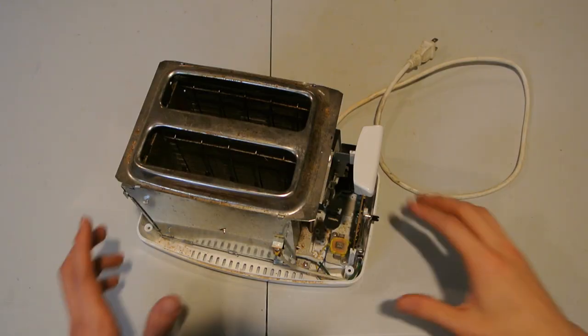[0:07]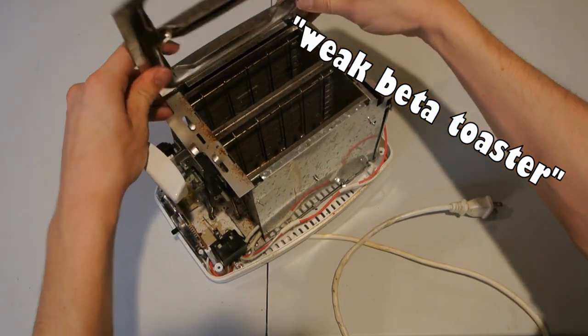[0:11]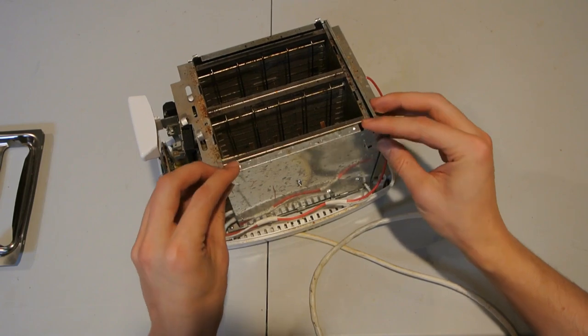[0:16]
In today's video, I'll be showing you how I turned this weak beta toaster into an alpha furnace with temperature control and over 1000 degrees Celsius temperature capability. Really, this project is much more of a meme than it looks.
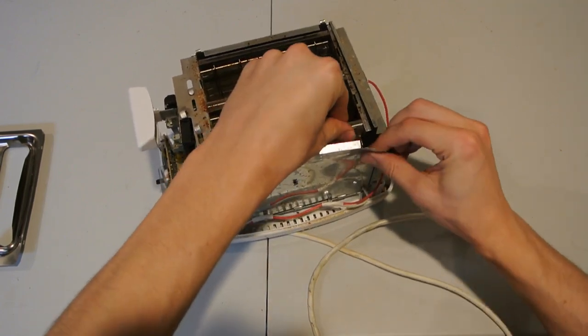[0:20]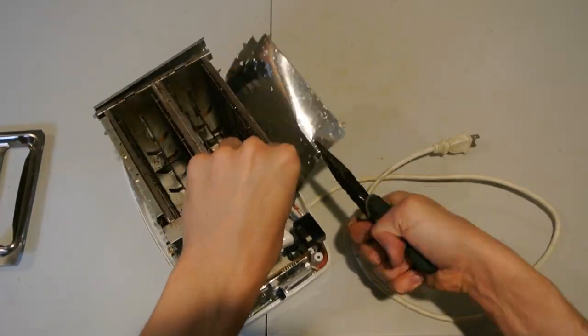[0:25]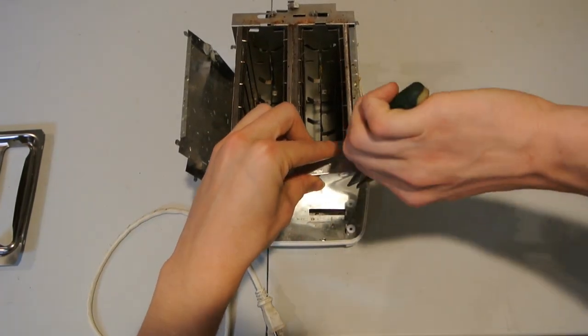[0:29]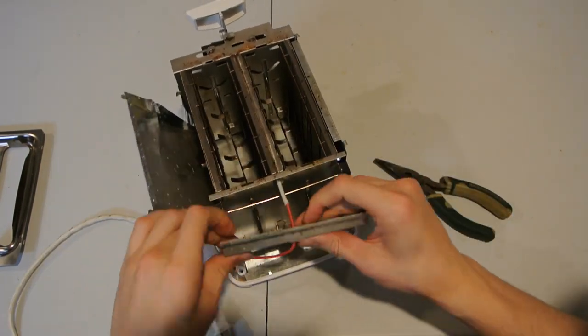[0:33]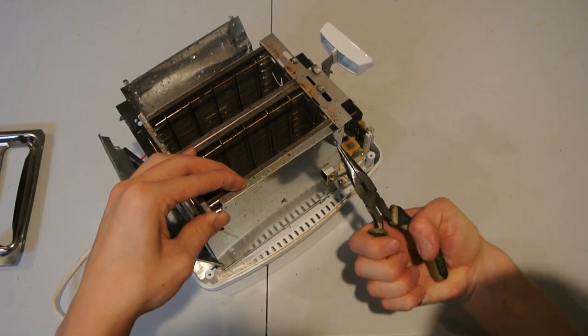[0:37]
I basically had this broken toaster and looked at it and wondered how much of a furnace I could build with it while spending as little money as possible. As it turns out, the answer is quite a lot. This furnace is temperature controlled using a cheap Chinese PID controller and thermocouple, and those components were the only thing I had to spend money on, so the total cost for this furnace is $30.
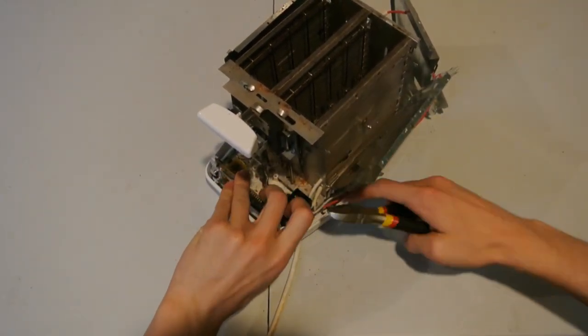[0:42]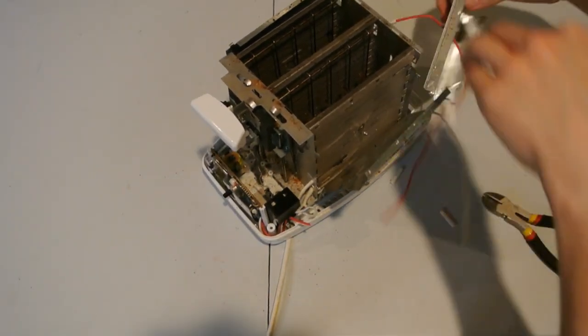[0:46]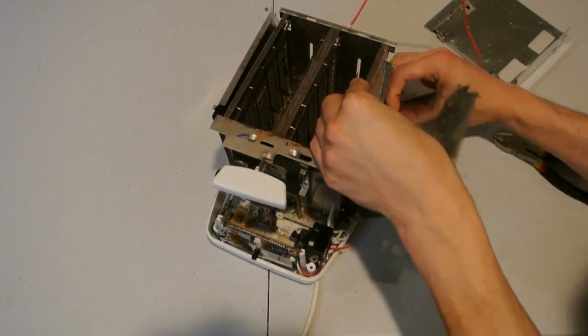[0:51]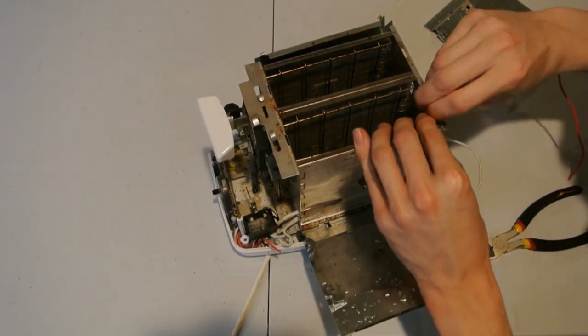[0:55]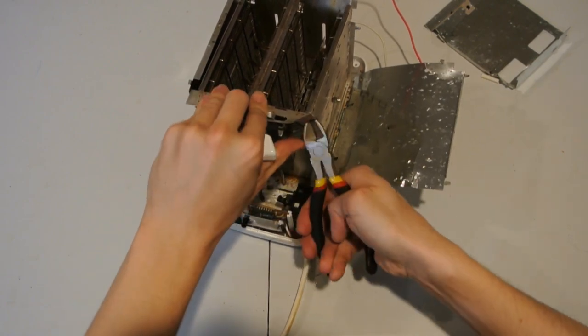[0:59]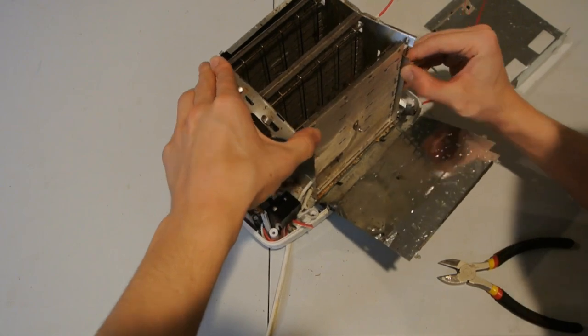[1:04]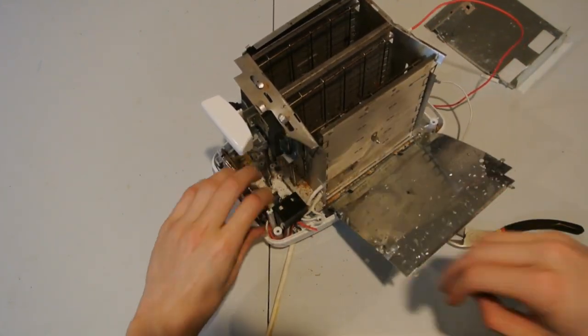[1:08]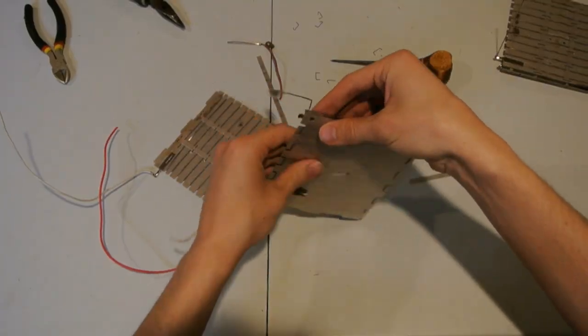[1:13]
While I take apart this toaster in triple speed, I should probably give a life update. I have now begun my PhD in nuclear chemistry, so that's what's been eating up most of my time recently. It is unclear how much time I'll have for making videos, but rest assured, I have plans to post many more videos covering wild and potentially hazardous projects. In the meantime, if there is any interest in videos showcasing some of the unusual and also hazardous elements that my lab works with, let me know in the comments and I'll see if I can put something together. We have more radioactive elements than you could dream of.
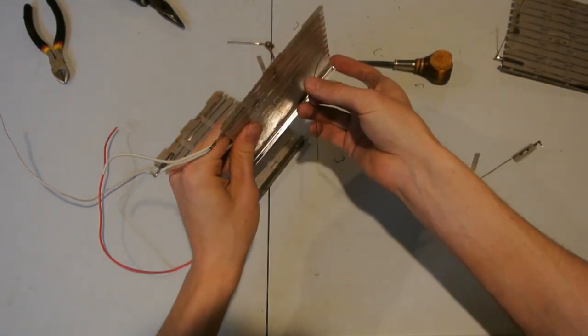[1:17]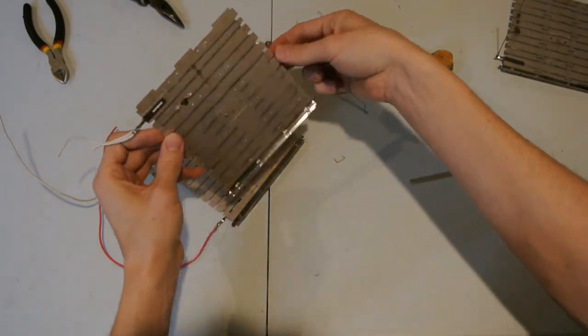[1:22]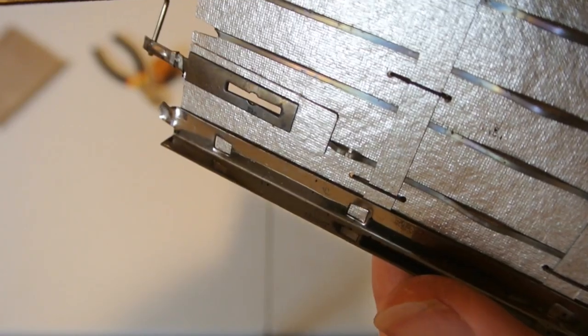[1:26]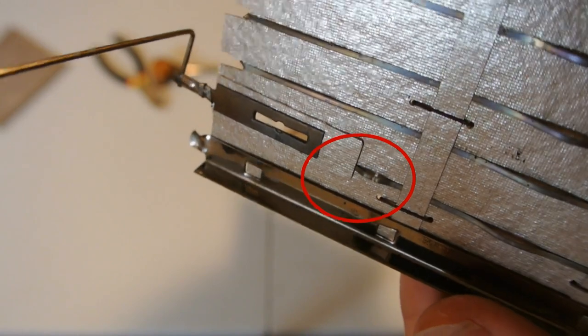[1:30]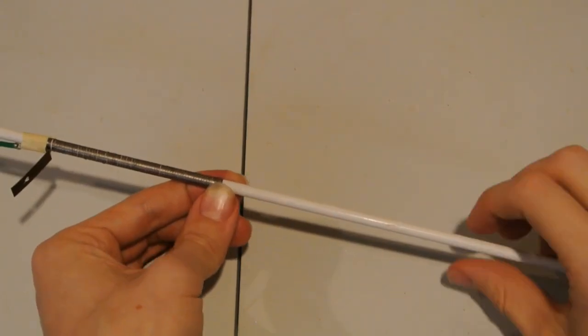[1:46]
Anyhow, after I'd taken the toaster apart, I unwound some of the heating coils from their mica insulation boards. I also actually found the busted section of nichrome wire that killed the whole toaster. Bad toaster. The best way to release stress in the coils was to power them up until they glowed orange, so I did that to make them more pliable, before grabbing a 1/4-inch rod that I had lying around and winding the nichrome wire to create nice, tight coils.
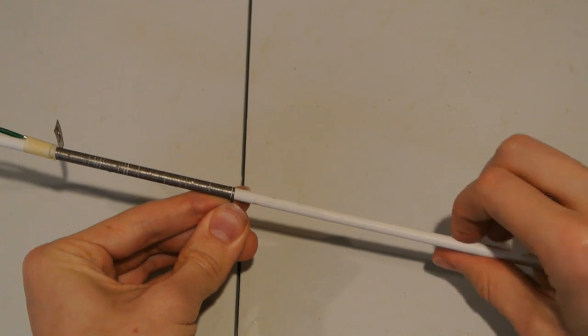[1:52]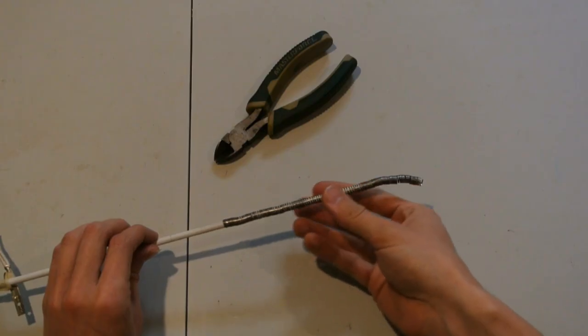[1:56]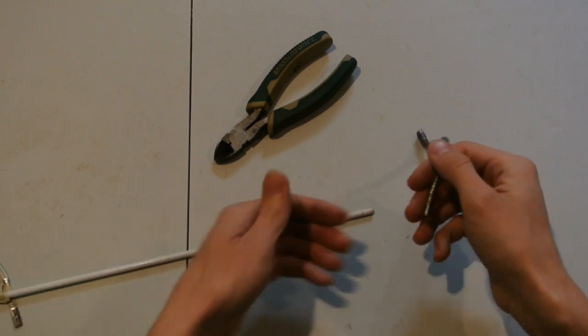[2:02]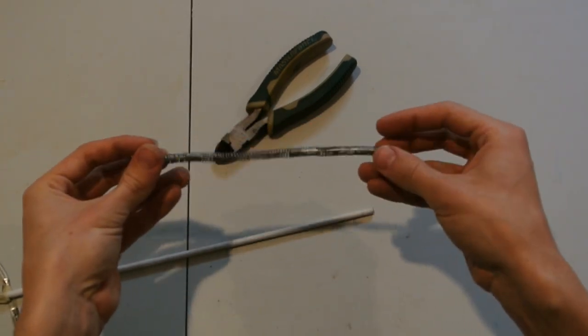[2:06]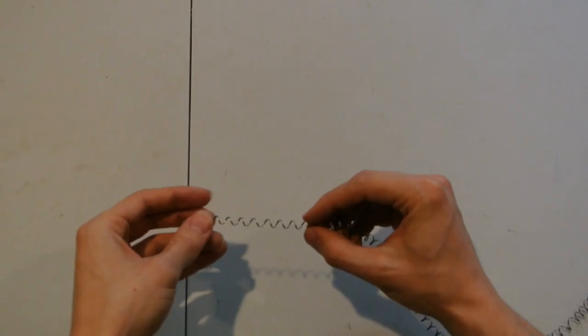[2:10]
This worked very well, but before I went further, I actually heat-treated these coils with a propane torch just to ensure that they would keep their shape once I removed them from the rod. These coils actually kind of remind me of the classic slinky toy. A slinky toy that gets hot enough to burn your whole house down. That's more like it.
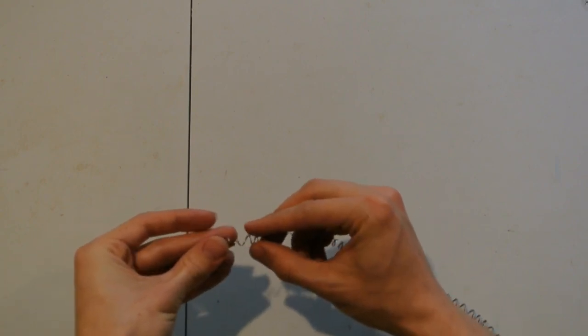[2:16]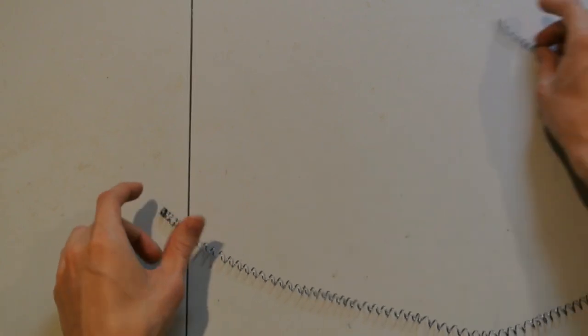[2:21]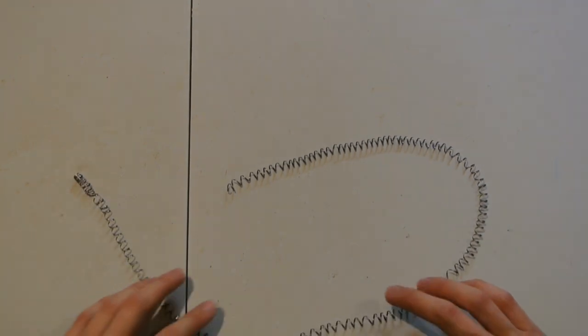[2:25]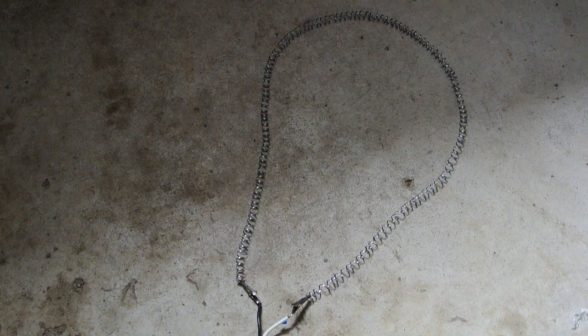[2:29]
Once both the coils were off the rod, I stretched them out to separate the coils, making sure to keep the spacing about even. I really didn't plan this step very much. Mostly, I just stretched them until they seemed like they were pretty well separated and not really bunched up in any places. Next, I connected the coils straight to the 120 volts out of the wall and determined the correct length of coil to get a healthy orange glow from that 120 volts.
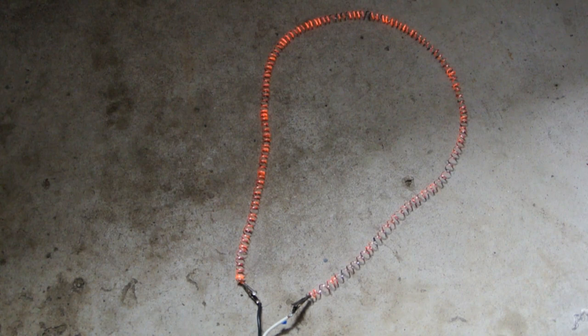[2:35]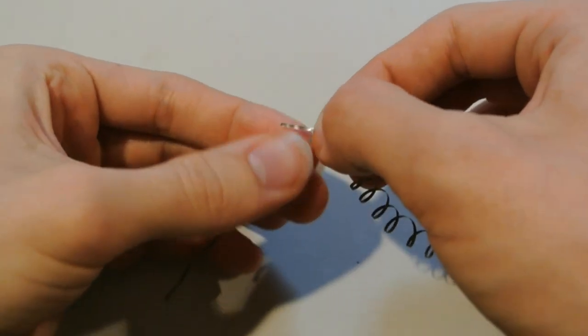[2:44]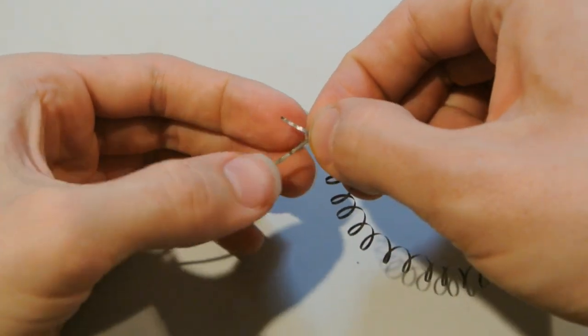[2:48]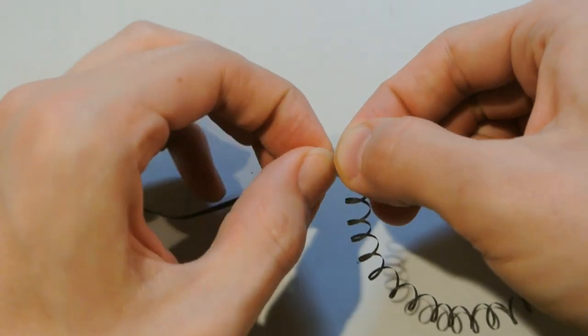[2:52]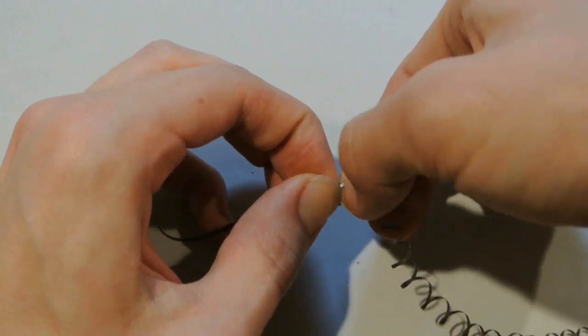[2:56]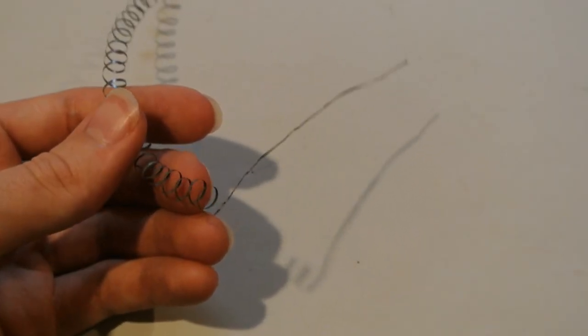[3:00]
With this done, I cut the coils to about the right length and then doubled over tabs of nichrome wire. These I attached to the coils to serve as current feed-throughs, and what was special about these was that the double thickness of nichrome would mean they don't get quite as hot, which will be helpful because they'll end up going through a fire brick in a very small hole and could overheat otherwise. This is what the coil ends looked like when completed.
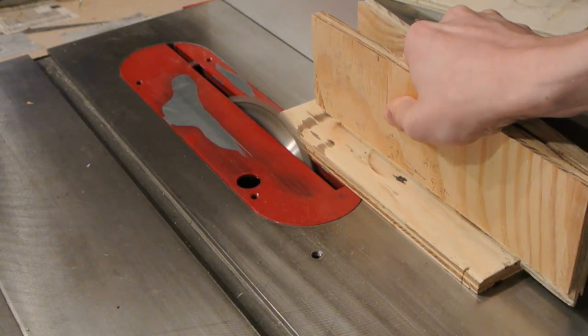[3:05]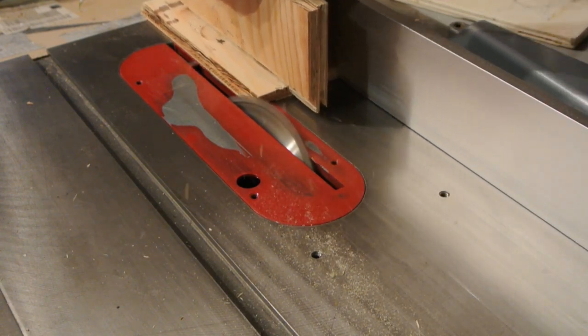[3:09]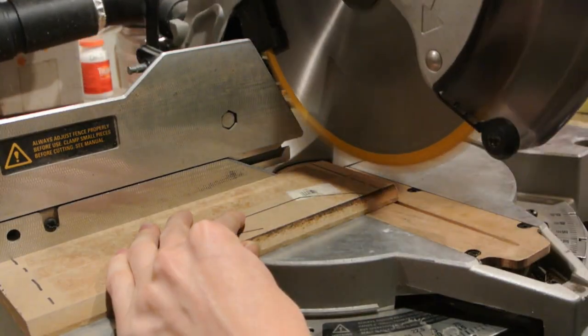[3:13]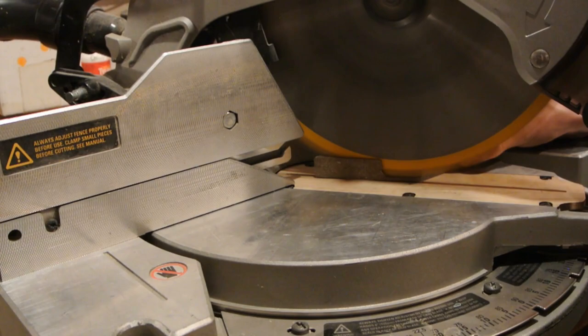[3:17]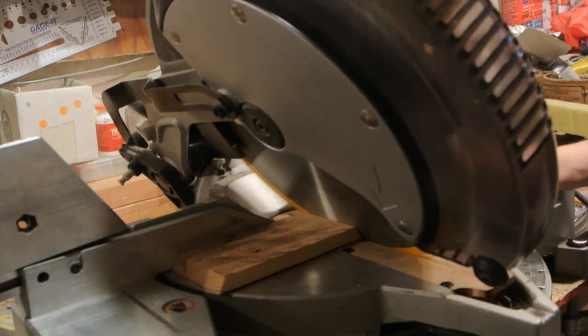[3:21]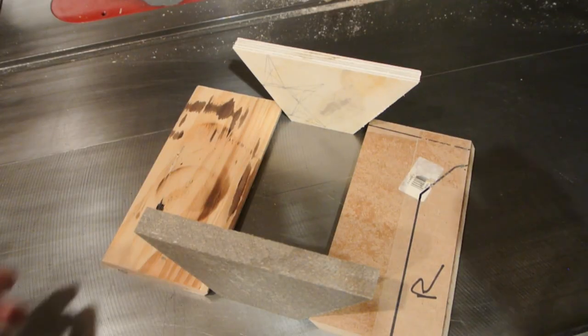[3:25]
Once these coils were completed, I moved on to building some of the forms for my custom fire bricks. I was designing the whole furnace to be of a hexagonal kiln-style construction, so I made the form for the bricks with 120 degree angles, and then also one form for hexagonal top and bottom tiles. This right here is how the brick form fits together, so I'll be making 6 of these bricks.
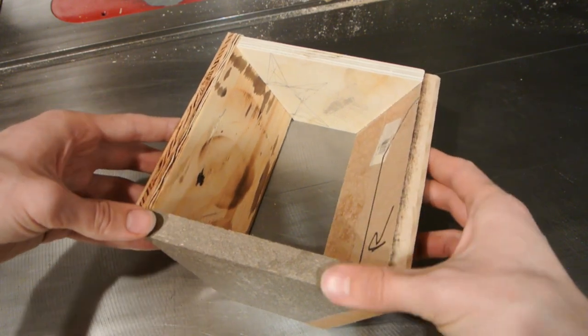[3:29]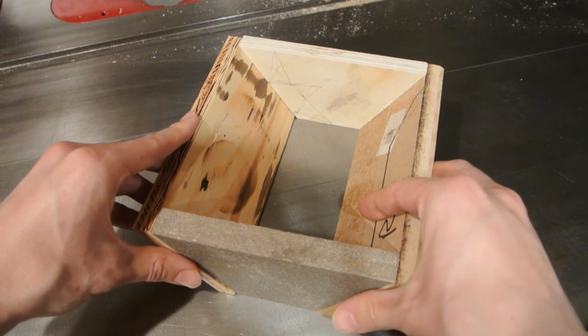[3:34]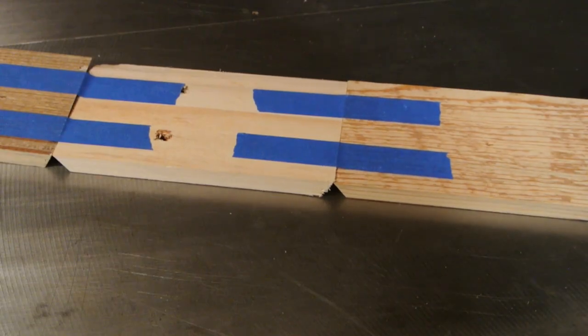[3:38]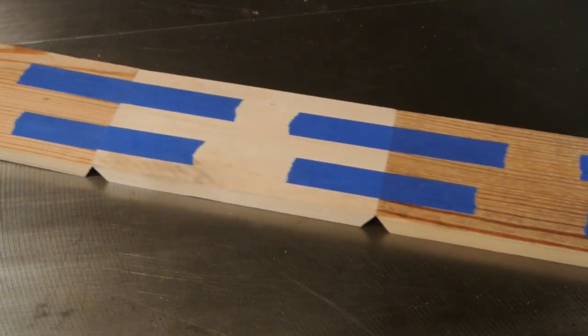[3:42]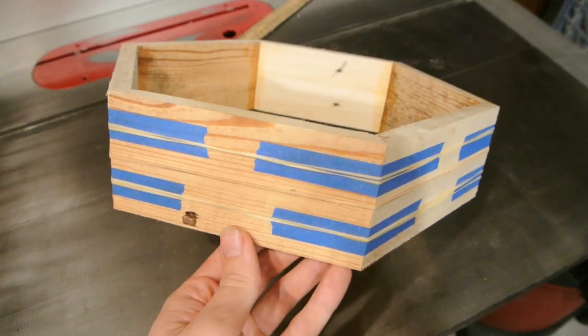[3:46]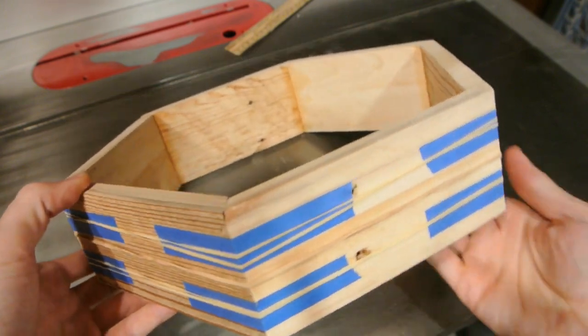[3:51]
Conveniently, the very sloped sides make for easy release of the bricks during the packing and drying process, which is important later. And here is how the hexagonal form laid out before I glued it together. I found that a really good secret here is to use normal painter's tape just as a sort of gluing form or sort of clamp, because it was much easier than finding a magical hexagonal clamp.
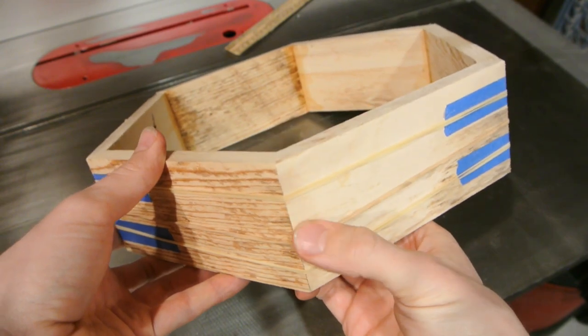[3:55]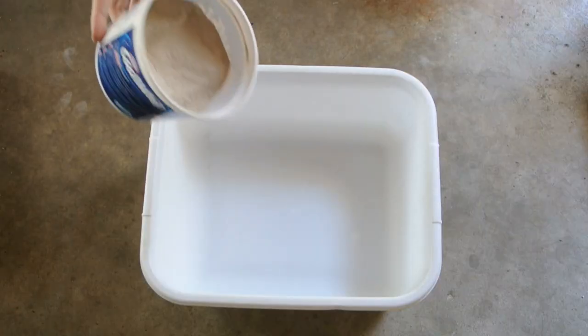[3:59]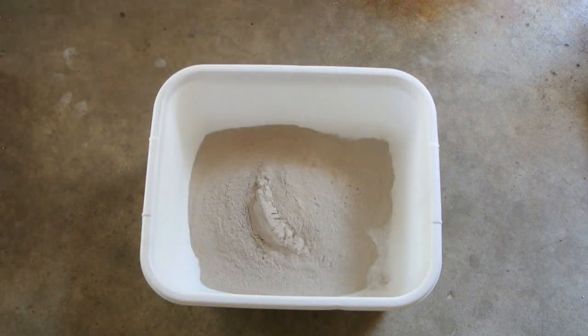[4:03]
Actually, I'm pretty sure I just made that up. Those totally are not a thing. To make my firebrick recipe, I started by mixing approximately equal parts by mass of fire clay and sand.
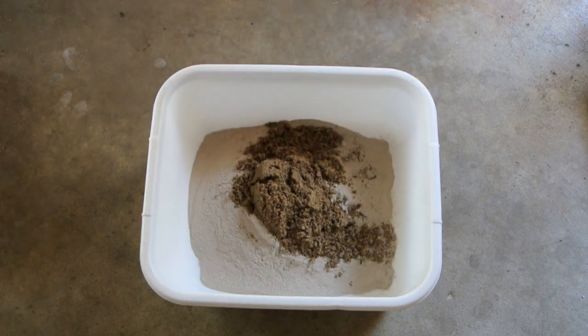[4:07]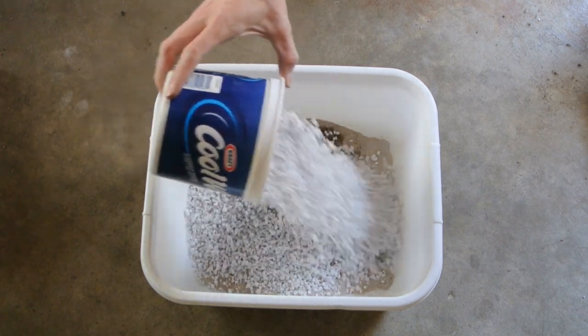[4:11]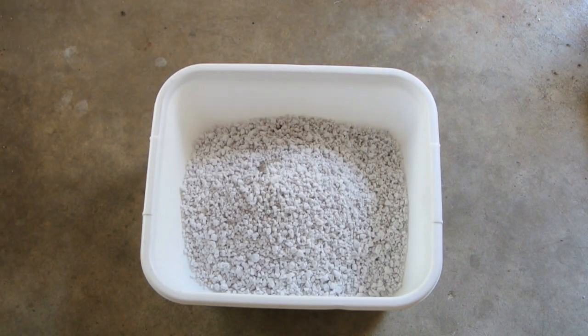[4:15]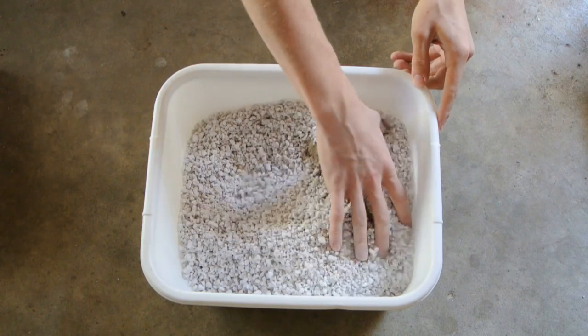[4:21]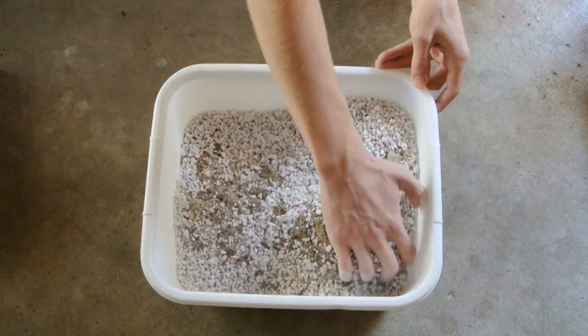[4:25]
To this, I added a lot of perlite from the garden section of the home improvement store. Really, here it is best to have a very perlite-heavy mixture so that the insulative properties of the mix will be maximized and cracking of the finished bricks due to excess clay content will be minimized. I mix this together by hand, making sure to avoid the cloud of definitely healthy clay dust.
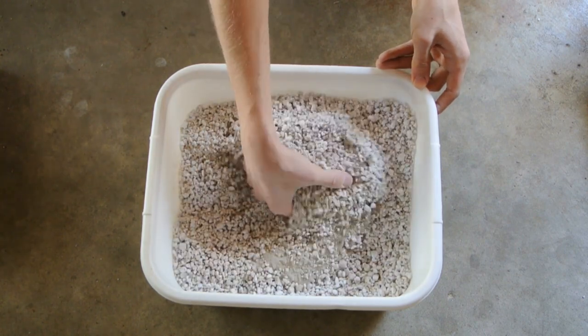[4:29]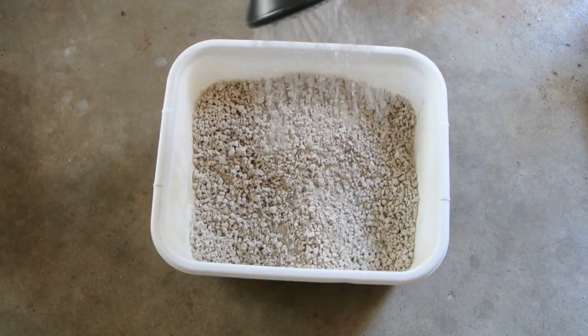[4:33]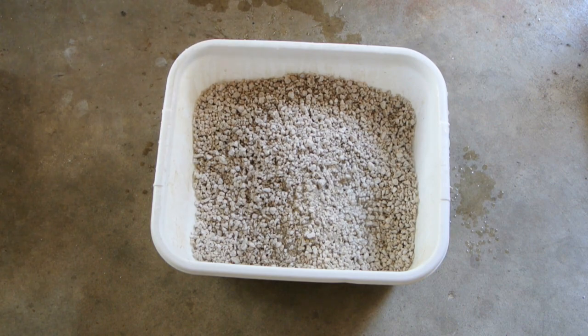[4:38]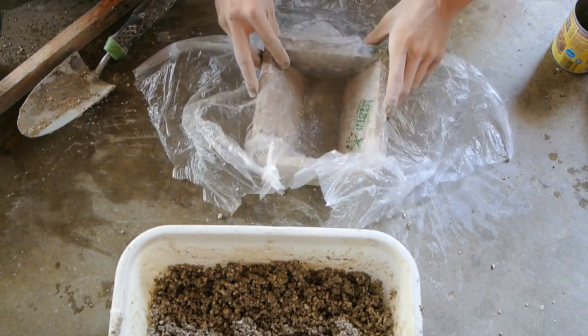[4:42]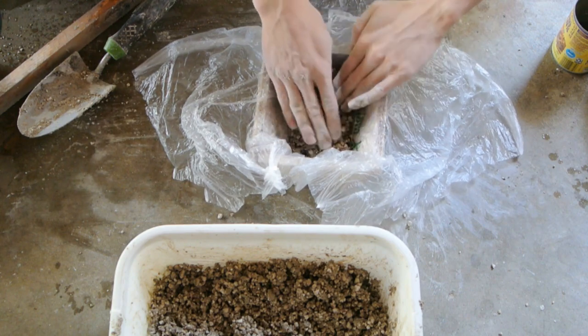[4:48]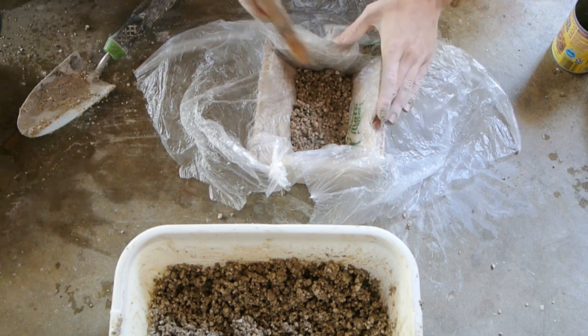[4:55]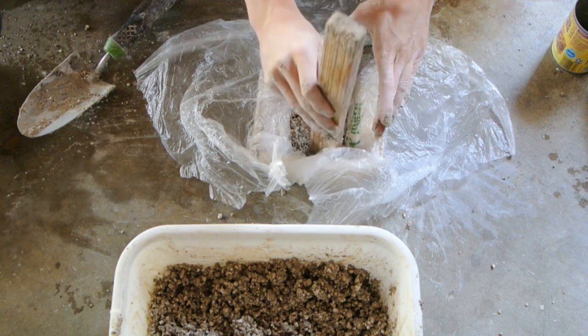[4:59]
A little sprinkle from the garden watering can helped to keep the dust down, and so once the mix was moist but not quite drenched, I mixed it together and then added a plastic liner to my form to help with release. Then I packed in the refractory mixture, taking care not to compact it too much and crush all the perlite. Really, here it's best to have the mixture squished but not quite demolished, otherwise again the refractory properties of the mixture will be diminished.
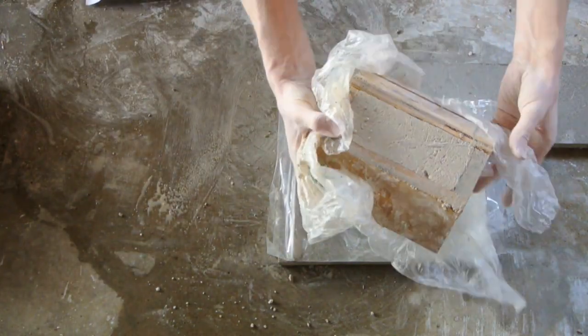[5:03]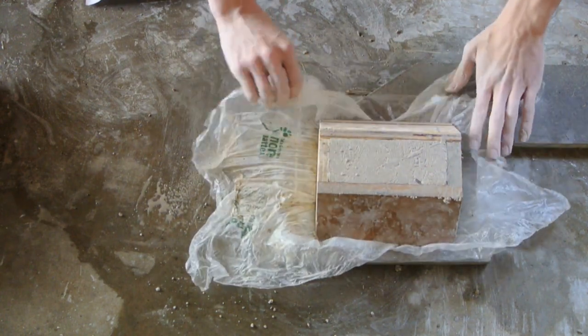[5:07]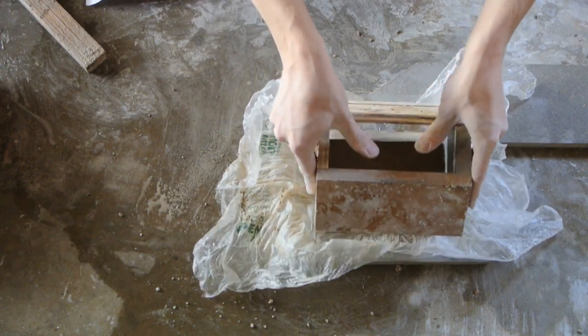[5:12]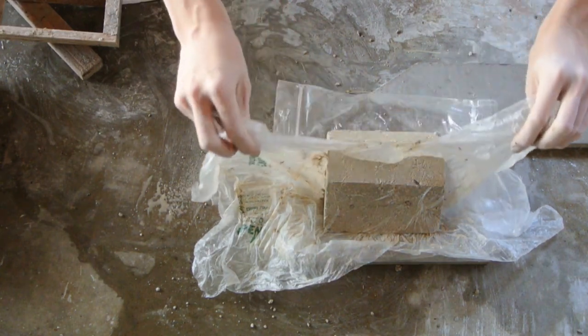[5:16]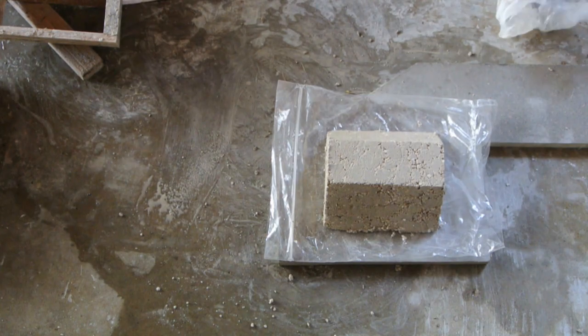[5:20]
Once each brick was made, the plastic liner came in really handy and made releasing the bricks quite simple. Once they were out of the form, I kept the bricks loosely covered by the same plastic liner, and this was just to help, again, slow the drying and minimize cracking. I didn't experience too many issues with cracking, but perhaps it's because I slowed down the drying.
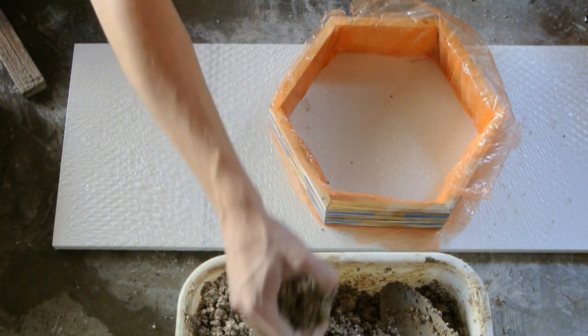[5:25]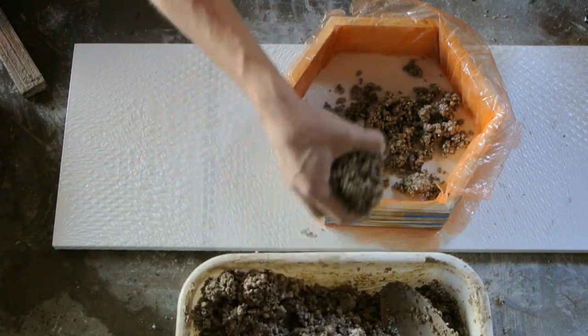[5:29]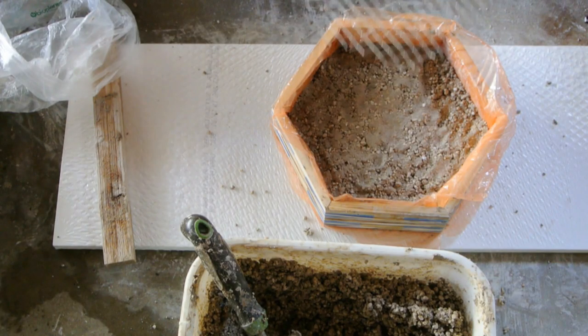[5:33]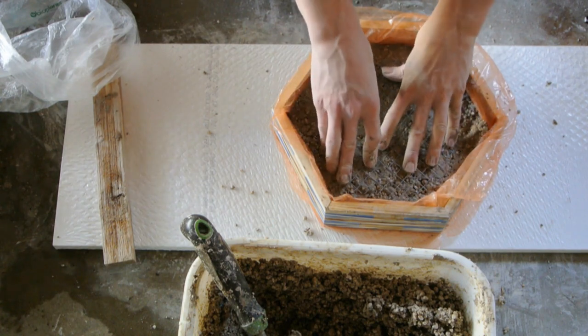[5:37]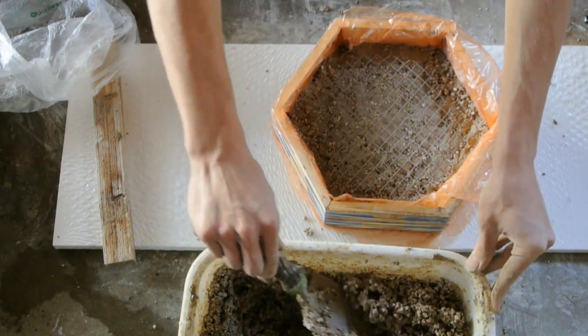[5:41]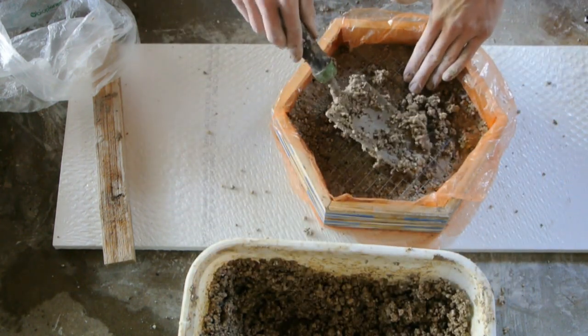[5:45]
I repeated the same process for the top and bottom hexagonal bricks, but this time I packed in the mixture only to about the halfway point before I placed a piece of steel wire mesh, about maybe half an inch grid spacing, in the mixture to act as a reinforcement and hopefully prevent any failures due to cracking. Then I packed in the mix the rest of the way and set aside the brick to dry.
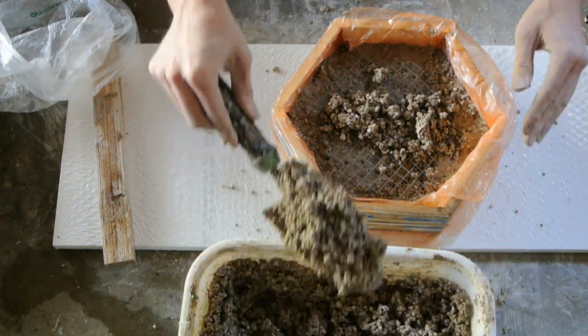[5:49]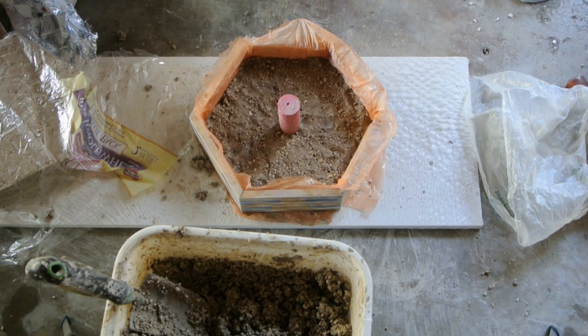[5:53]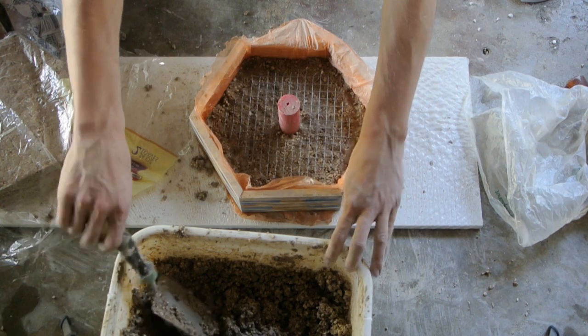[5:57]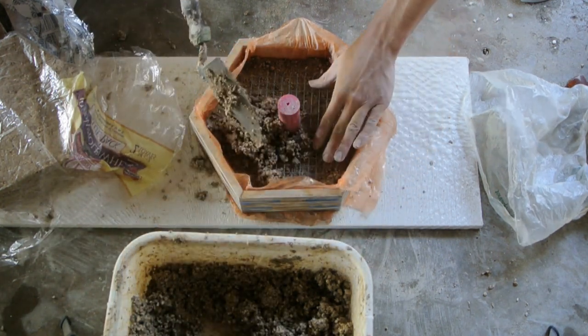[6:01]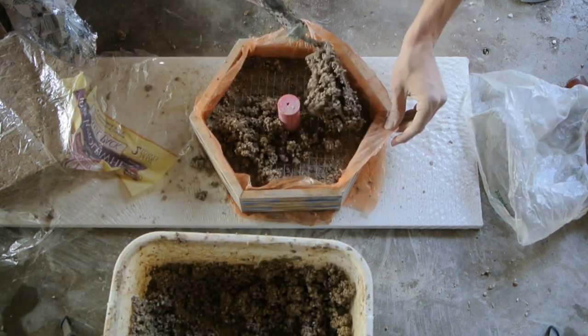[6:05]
I did the same for the top brick, but this time I also added a piece of plastic round stock to act as a form, and this would become the viewing hole in the top. The round stock I used was just a piece of melted plastic milk bottle cap, and it worked well to create a hole that I can also add metal to the furnace using while it's still operating without taking the lid off.
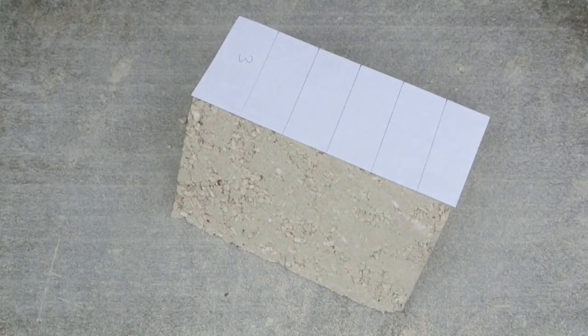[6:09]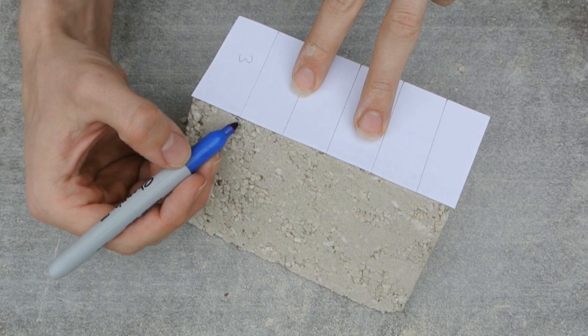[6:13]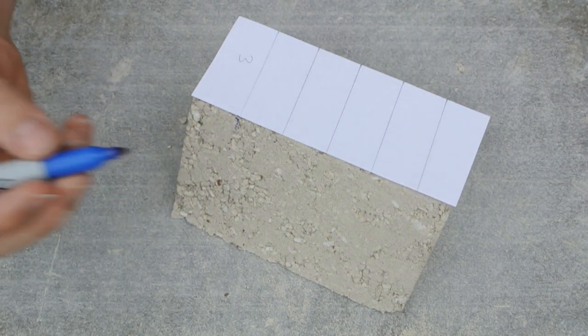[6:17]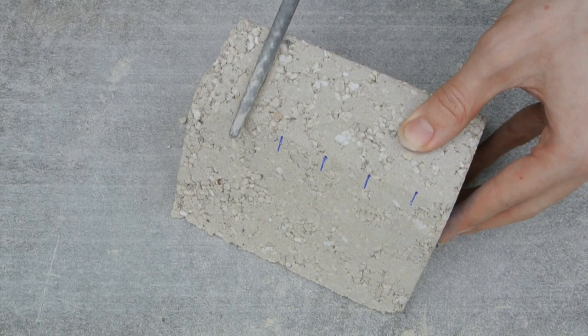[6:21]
After a few weeks had passed and the bricks were dry, I used a paper template to mark the start and end points for the heating element grooves. These were designed to line up as a complete spiral once all six bricks were put together. I used a regular woodworking file to carve out these grooves, and this worked very well.
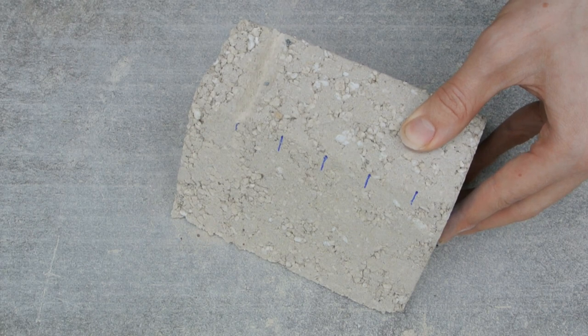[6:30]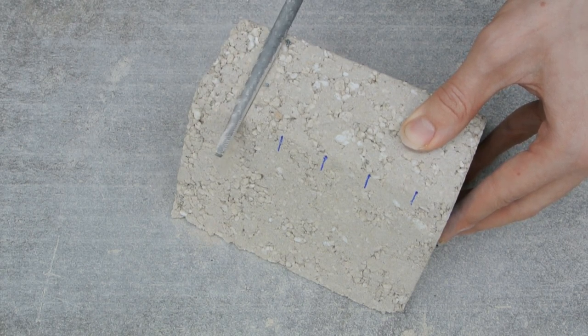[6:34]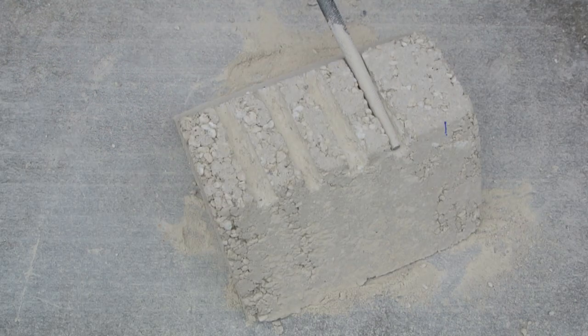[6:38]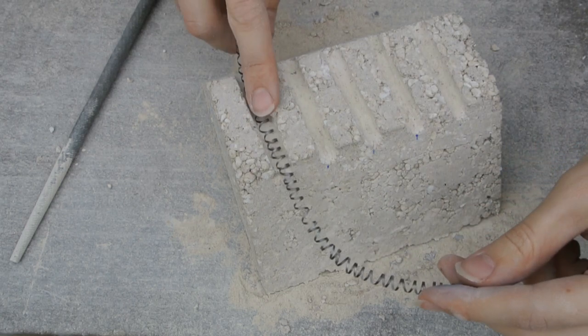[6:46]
The bricks were fairly soft, so it was easy work, but I had to make sure not to go too fast, or else I would risk breaking the bricks. I also used the same file to create a lip inside the grooves so that gravity would help hold the elements in and keep them from falling out. Then I tested the elements to ensure that they had a proper fit.
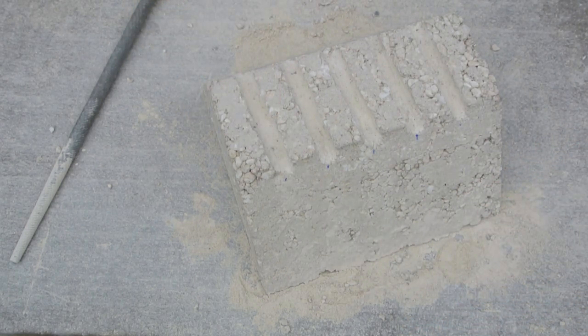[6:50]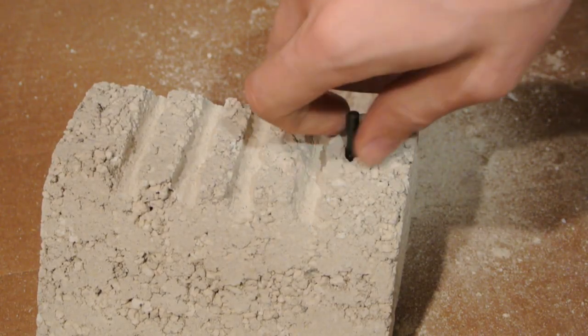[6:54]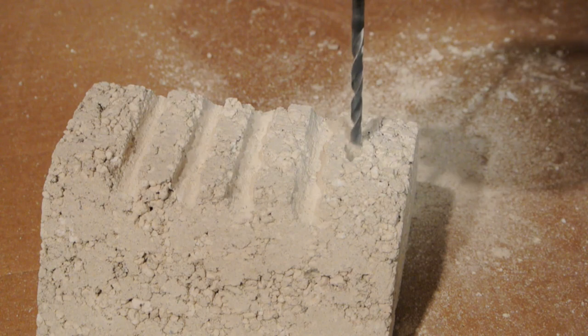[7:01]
They fit well, so then next I made holes for the thermocouple and current feed-throughs using a drill bit. The bricks were soft enough that I really didn't think using a power drill would be smart, so I just did this part by hand, and that seemed to work just fine.
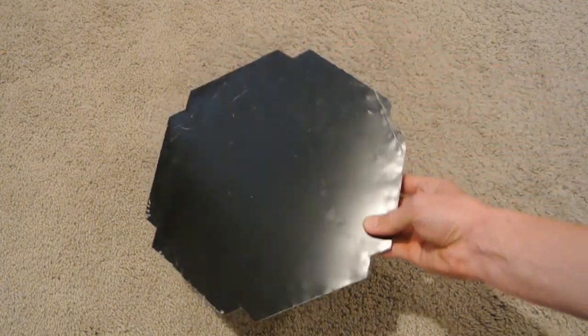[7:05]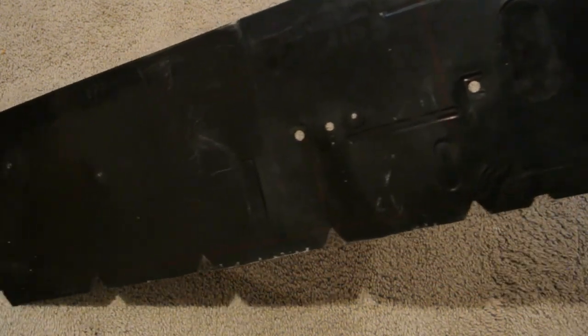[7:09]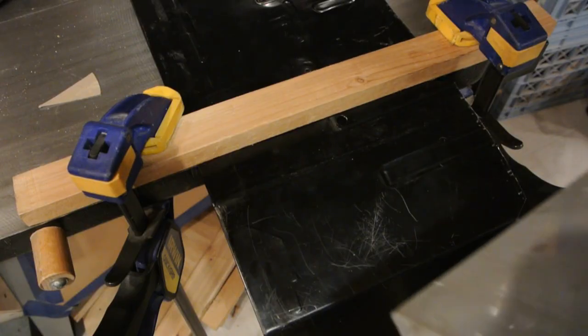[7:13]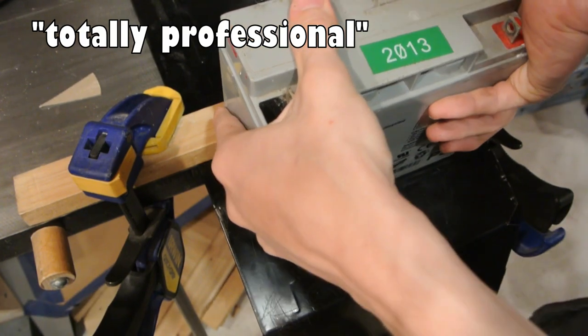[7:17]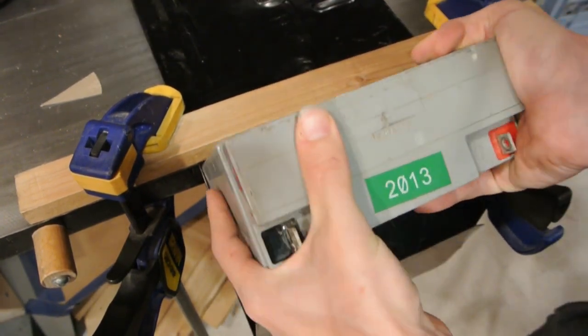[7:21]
To make the frame for the furnace, I grabbed an old microwave and hacked it apart using sheet metal snips. Then I bent the pieces into shape using this absolutely, totally professional sheet metal brake that I improvised with a few old clamps and a discarded motorcycle battery. Actually, I think it worked pretty well, all things considered.
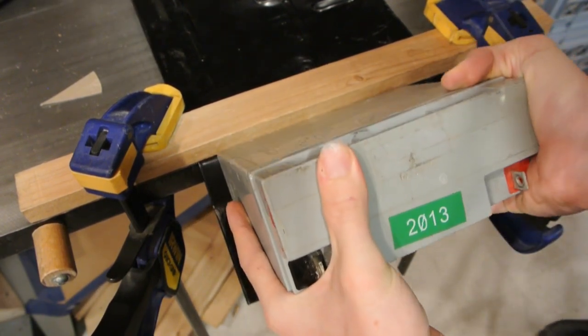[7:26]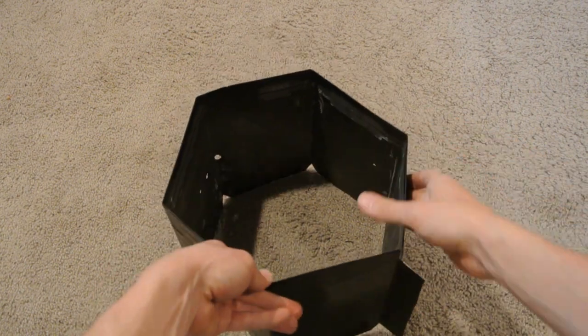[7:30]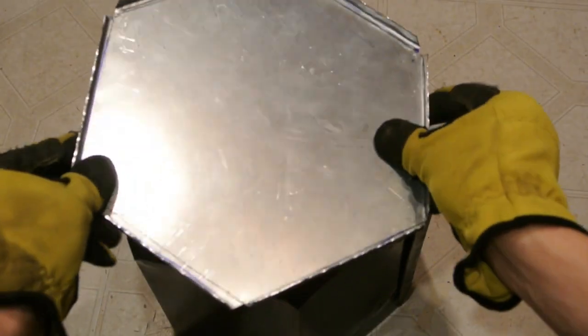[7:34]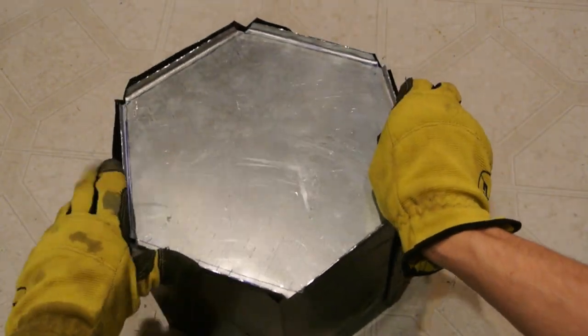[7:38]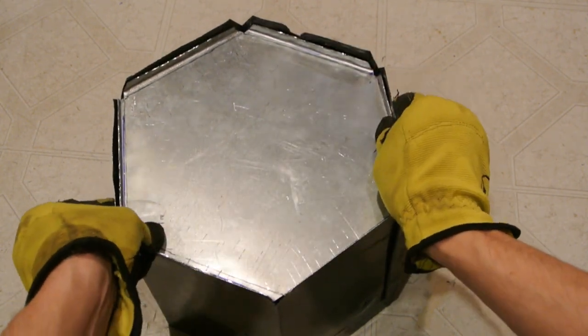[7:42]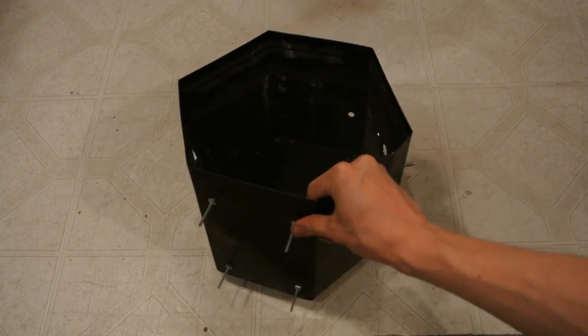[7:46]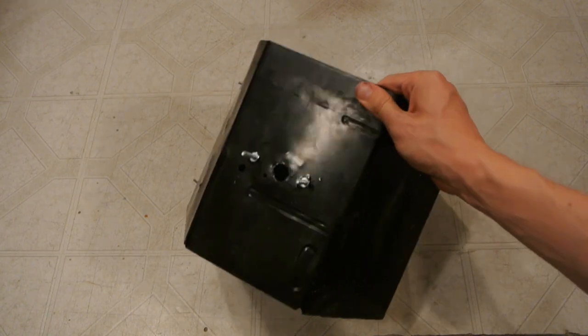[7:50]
After this was done, I had a great-looking sheet metal hexagon and a matching bottom for this hexagon. Considering the setup that I used to manufacture these parts, I'm actually quite surprised that they fit as well as they did. In the end, the frame for my furnace really reminded me of one of those classic Christmas cookie tins, only darker, more evil.
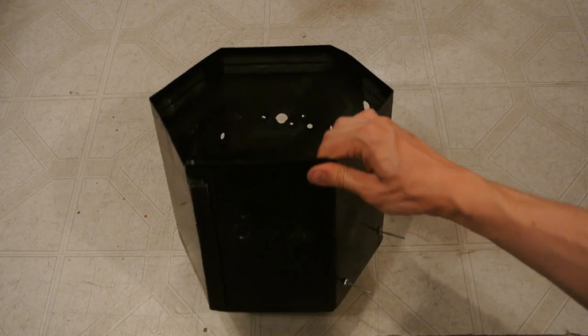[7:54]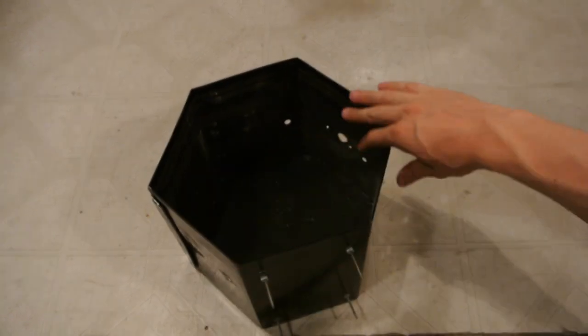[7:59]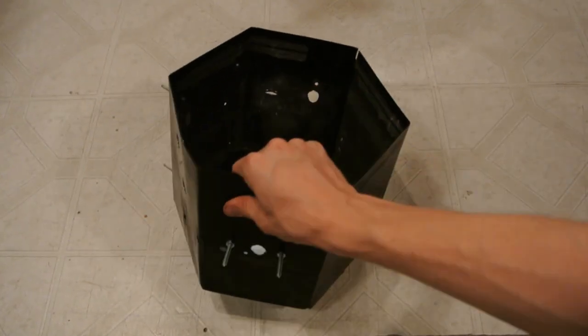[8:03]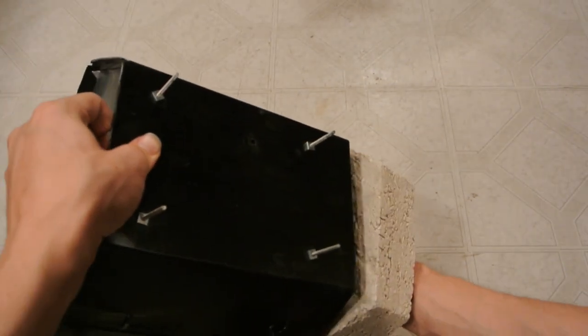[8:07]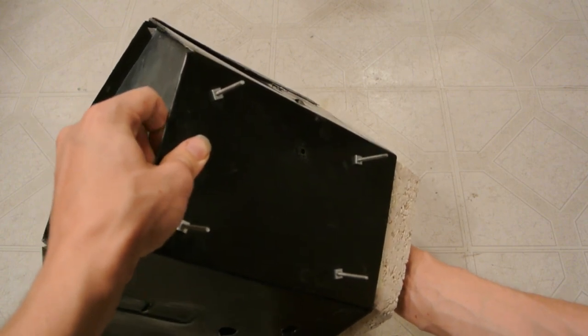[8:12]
I mean, don't you think this should be filled with Christmas cookies? Well, it's not. I also added some standoffs for the thermocouple as well as the temperature control board. Then I began the process of trying to squeeze the bottom hexagon brick into the furnace frame. This part actually scared me because it totally seemed like the whole thing would break and ruin all the work, but in the end, I got it to fit without incident.
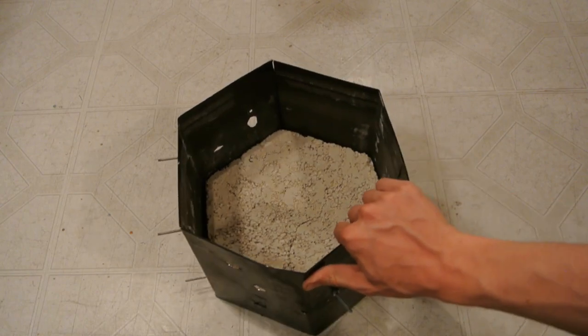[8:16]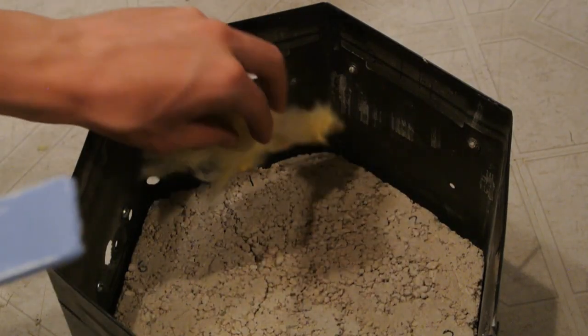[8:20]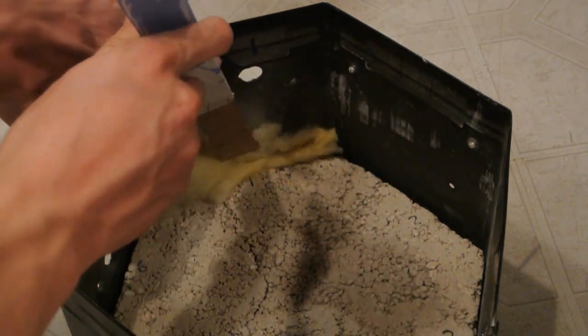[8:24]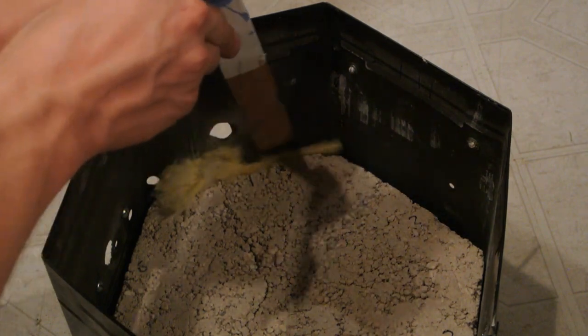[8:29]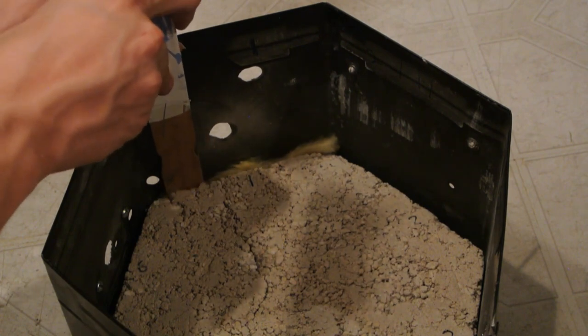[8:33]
With this brick in place, I used some extra fiberglass housing insulation to shore up the cracks between the brick and the sheet metal. This will both prevent the brick from moving and also cracking, and it will also keep more heat in and less heat getting to the furnace exterior, although it is important to mention that this insulation can melt.
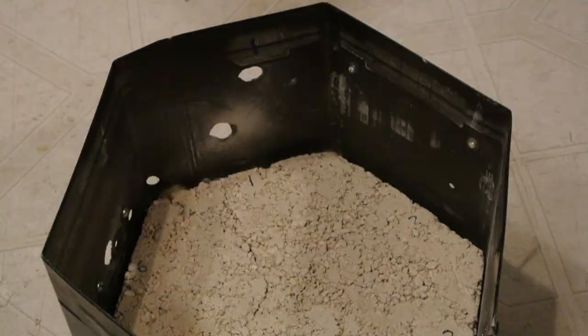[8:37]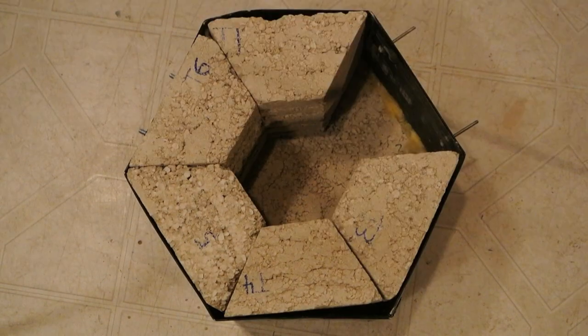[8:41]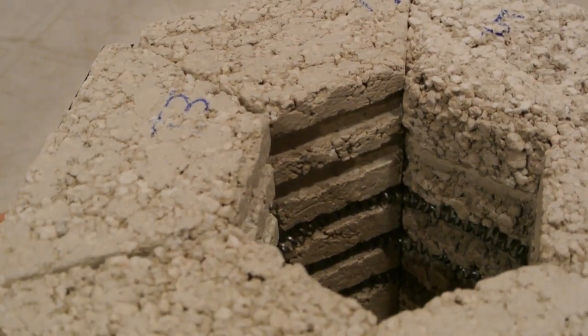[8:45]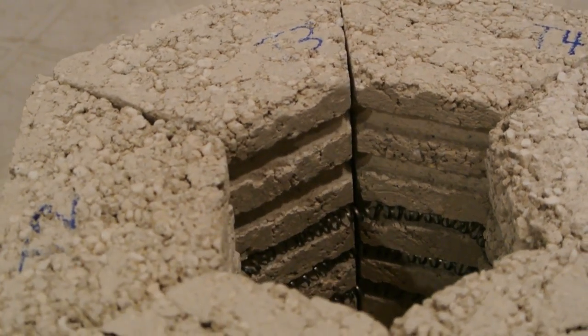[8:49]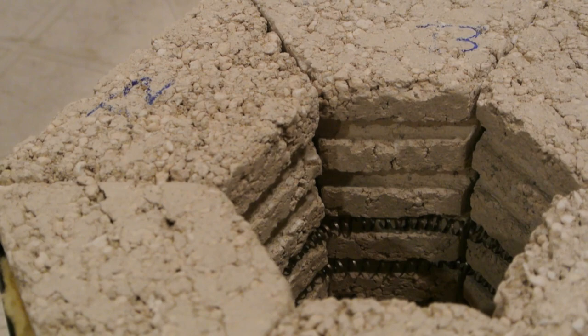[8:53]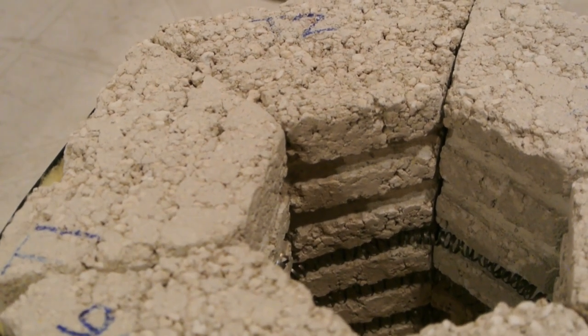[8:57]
This is what the inside of the furnace looked like after installing the nichrome coils. Overall, for a completely homemade refractory mix that wasn't even fired before use, I'm pretty happy with how the bricks held up during manufacturing. There are definitely some areas of chipping, but nothing that was too unmanageable.
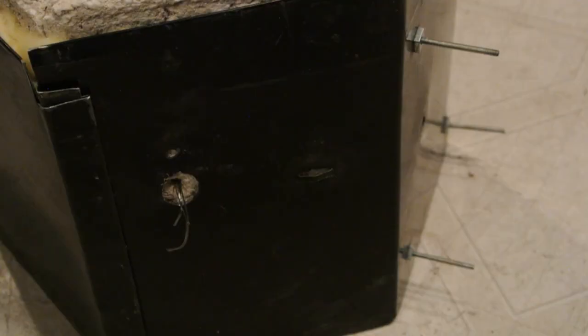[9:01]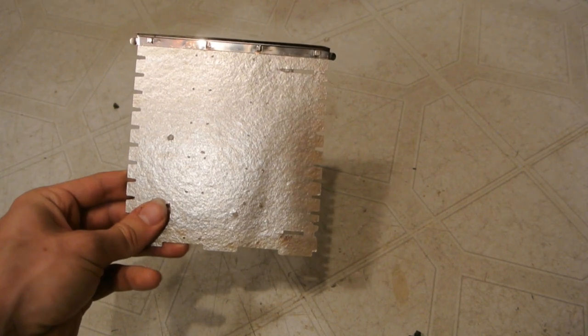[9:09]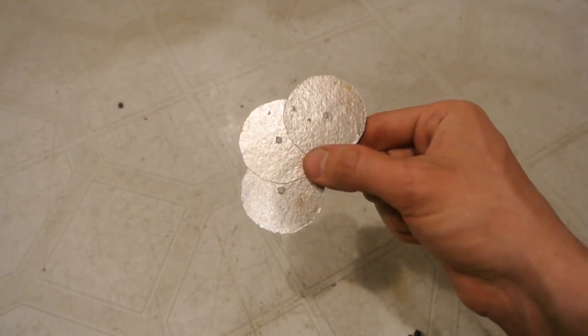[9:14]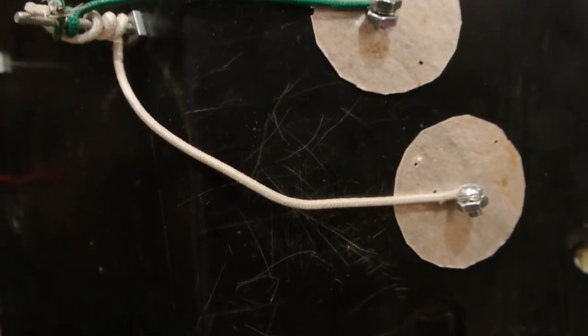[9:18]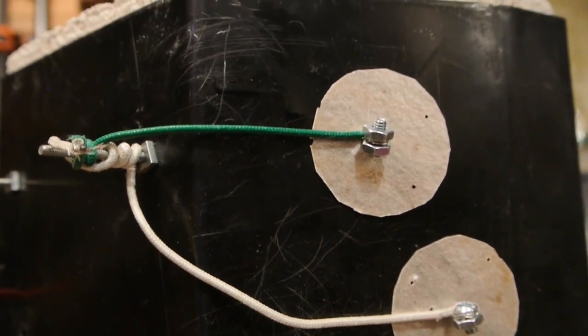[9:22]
The current carrying leads for the nichrome coils stuck out of the furnace just like this, and I used some of the mica insulative sheets from the original toaster to make some insulating discs that would go on each coil to prevent any shorting out on the frame of the furnace. Here you can see how they're installed, with bolts to connect the toaster heatproof wires to the nichrome coils.
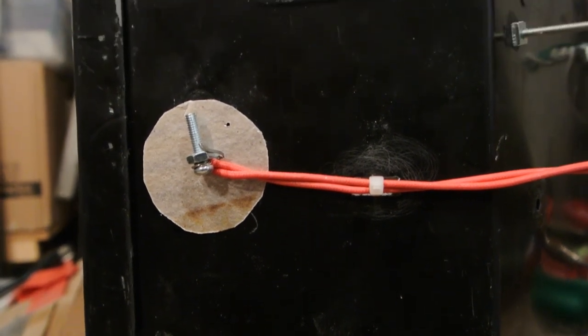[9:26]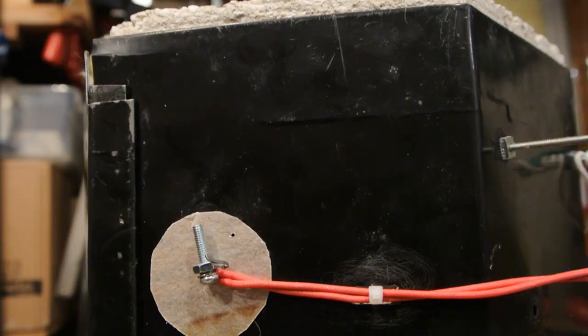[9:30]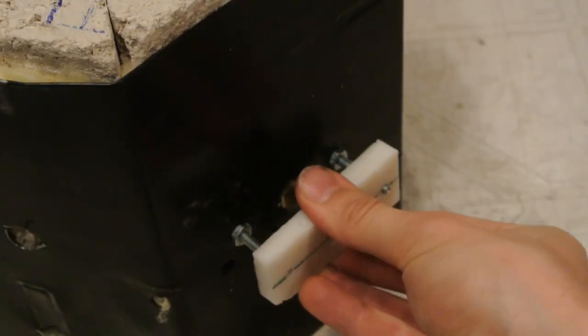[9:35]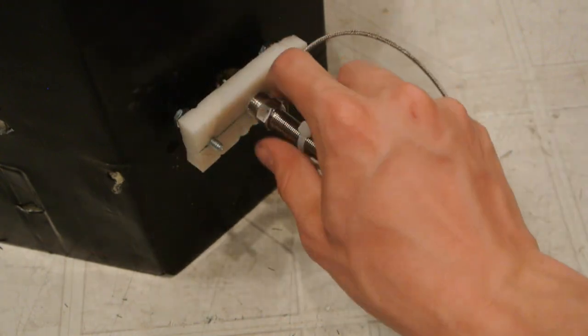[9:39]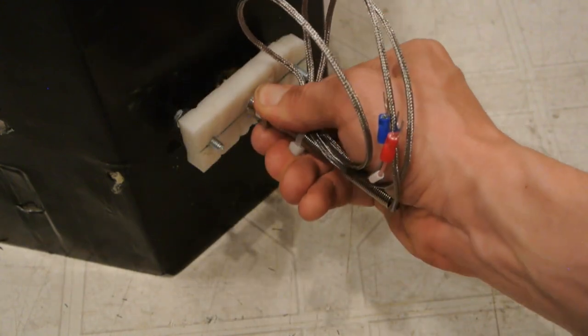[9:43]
I'm running the coils in a center-tapped configuration where one end of each coil is connected to the other and also to electrical hot, and then both ends are connected to electrical neutral. I then installed the thermocouple mounting plate and the thermocouple itself, just twisting it into the recycled milk jug plastic. The thermocouple actually barely peeks into the furnace, so I'm not sure if it needs any more exposure to get the temperature right.
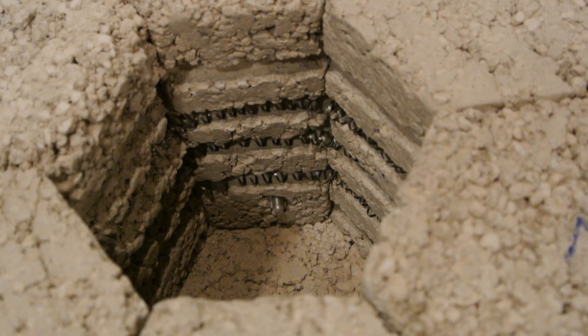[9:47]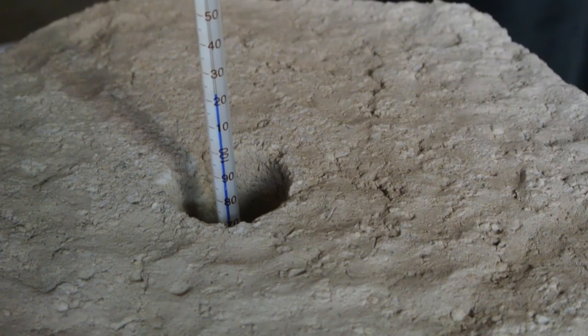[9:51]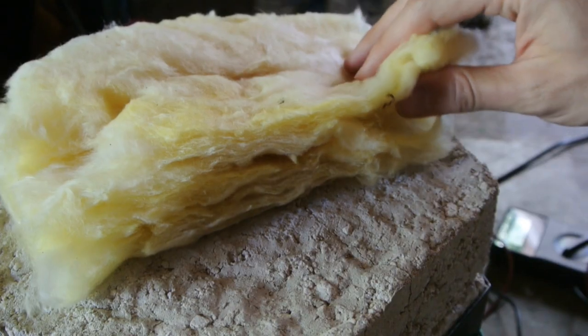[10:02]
For the first run of the furnace, I just hooked it up to a variac from an old gel electrophoresis power supply and used a very low voltage to heat it slowly, driving off any water without cracking. Then, of course, I ran it at full blast, and it was awesome.
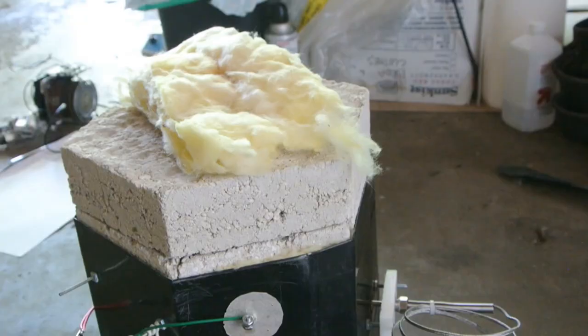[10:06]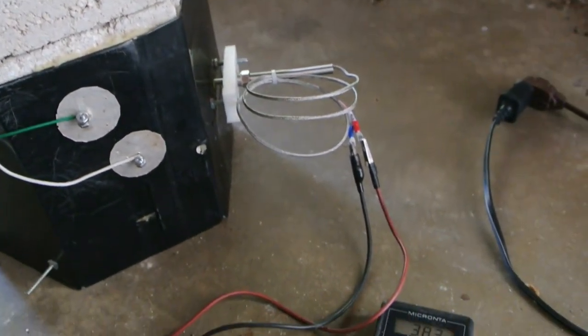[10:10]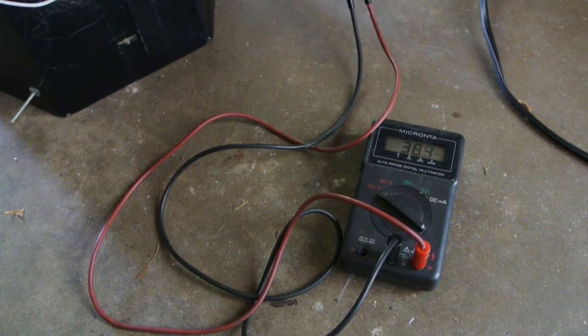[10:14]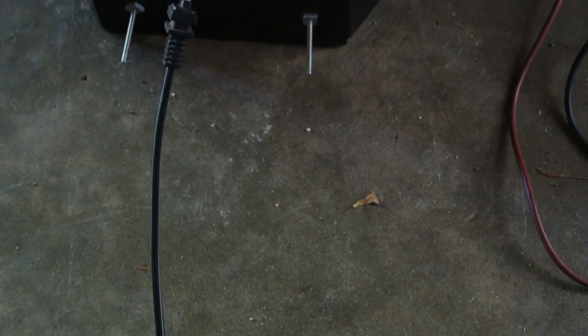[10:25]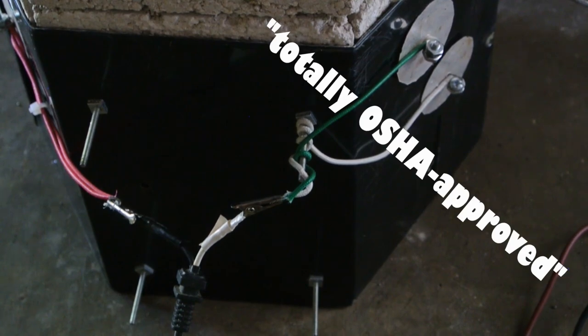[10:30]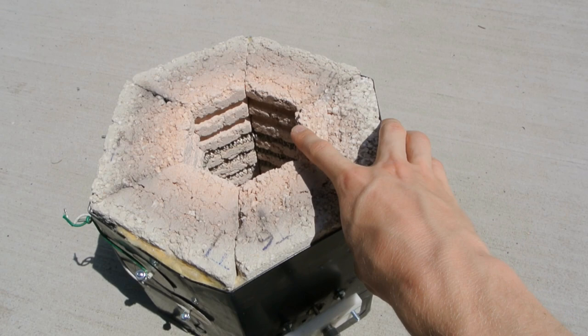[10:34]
Here is the whole setup for the first firing. Just using a simple digital multimeter on the thermocouple to read its voltage, which can be converted using online charts into temperature. The red glow of evil. Here's my totally OSHA-approved electrical setup to power the furnace. It's not permanent. After I let things cool down slowly, I checked on things to see how the furnace fared.
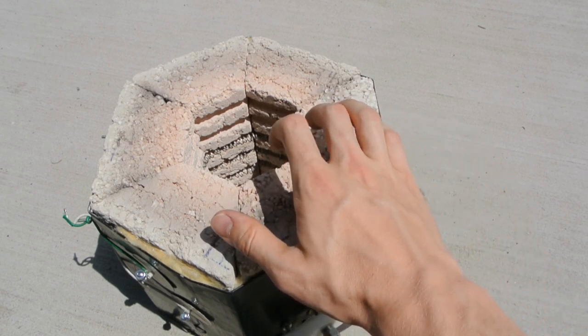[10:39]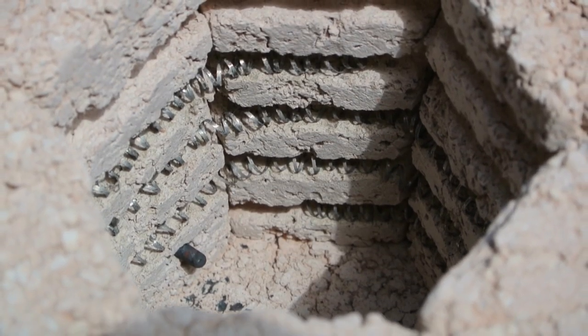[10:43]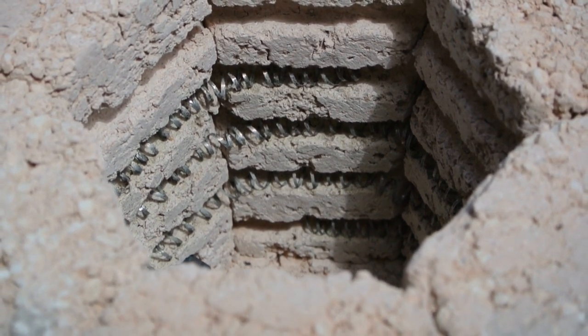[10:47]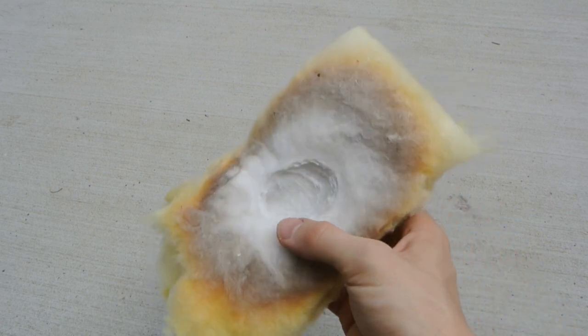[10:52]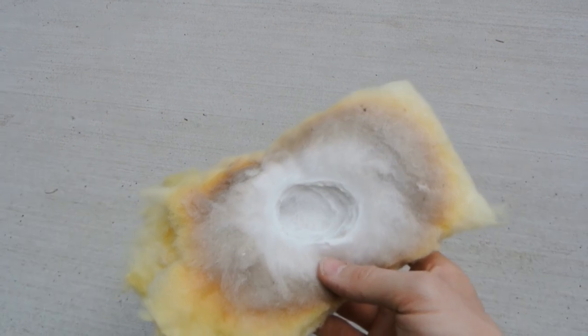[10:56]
The heat fired the bricks to a nice pink color, and everything was actually pretty intact. The thermocouple did suffer some oxidation, but all the coils were still okay, so I would chalk this up as a huge success. As a side note, the household insulation is not rated for high temperatures and will melt. Good to know.
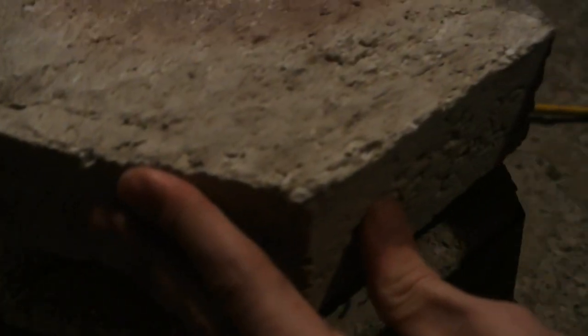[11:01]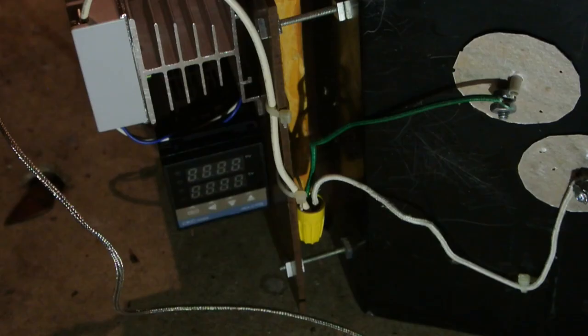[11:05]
With the furnace duly tested, I loaded it up with some aluminum in a soup can and popped the lid on. The PID controller did eventually arrive from the slow boat from China, but by then I was mostly done with this project and totally forgot to film installing it. Here it's been set to 750 degrees Celsius.
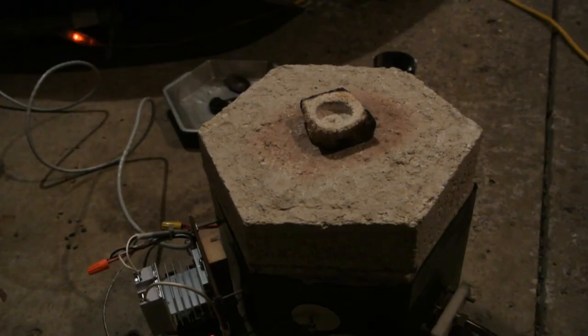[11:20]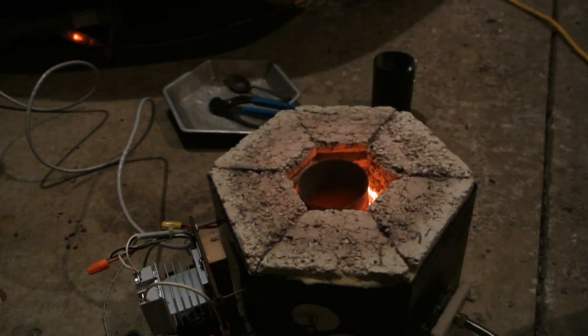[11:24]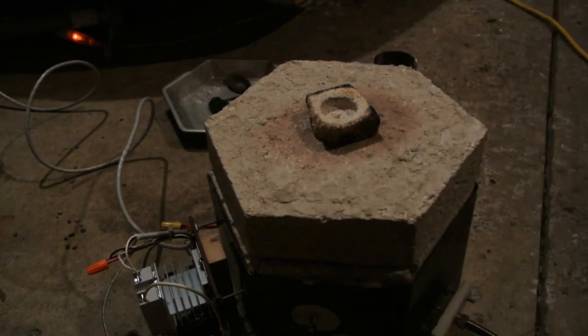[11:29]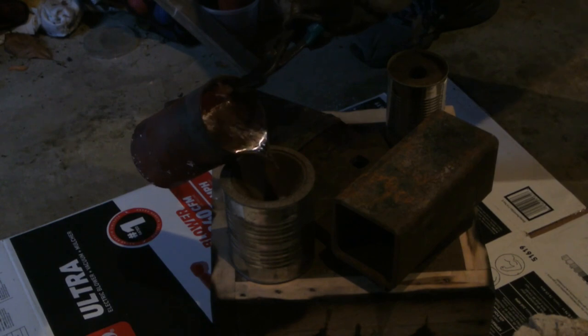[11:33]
After about an hour or so, things were looking pretty well done inside, so then it was finally time to take out the aluminum and actually do the first pour. This casting is for another project and will hopefully get its own video in the future.
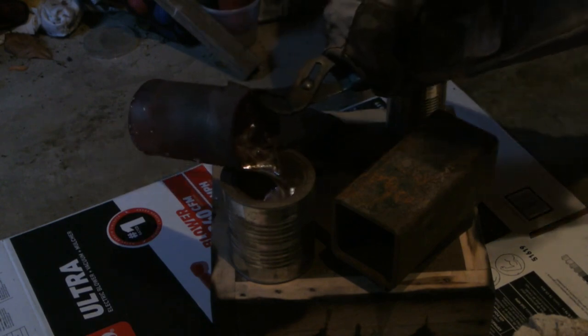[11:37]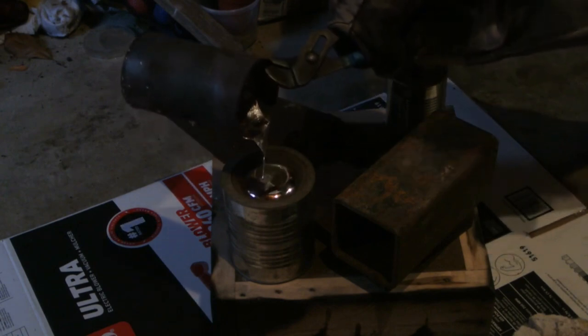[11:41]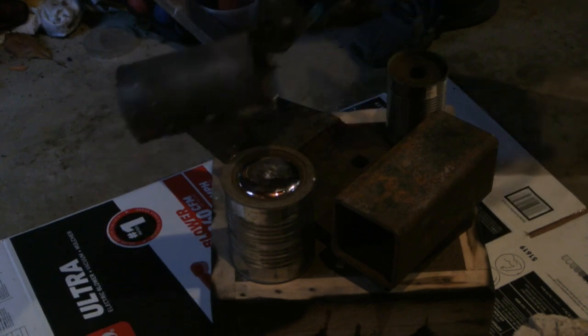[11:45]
As a side note, I need some help. My PID controller currently has an issue where the temperature reading gets to about 100 degrees below the set point. If you know what I need to change to fix that, let me know in the comments.